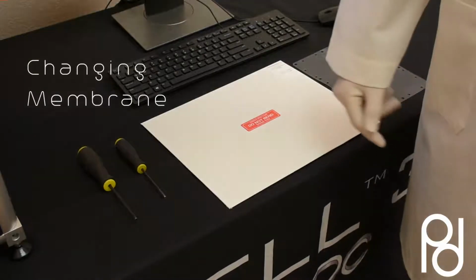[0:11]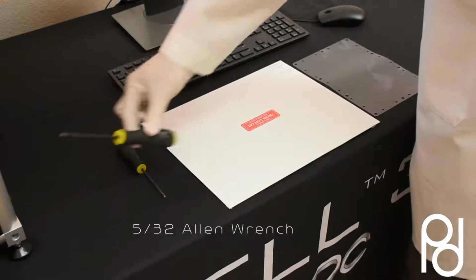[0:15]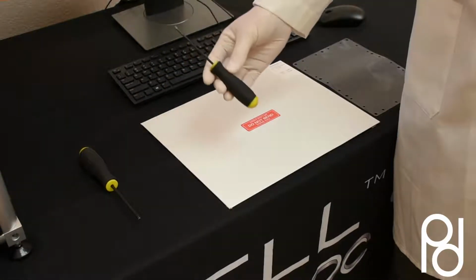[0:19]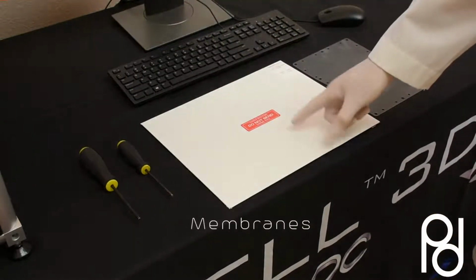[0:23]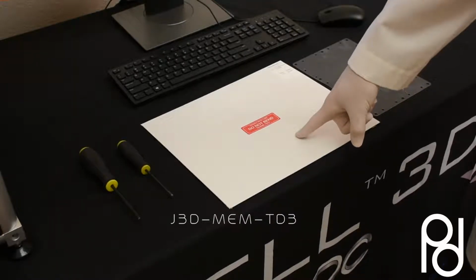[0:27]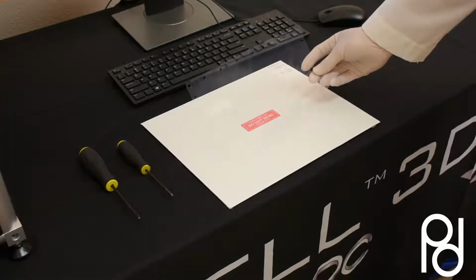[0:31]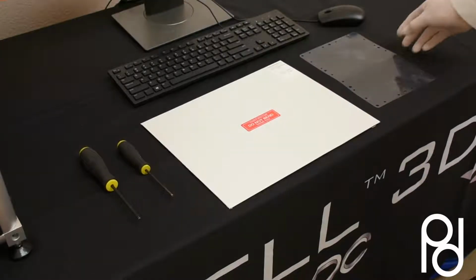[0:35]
Video, we're gonna show you how to change the membrane. You will need a 5/32 Allen wrench, also a 1/8 inch Allen wrench, the membranes. This will be the J3D-MEM-T03. This is what it will look like when you pull it out of the envelope. And this is what we'll use.
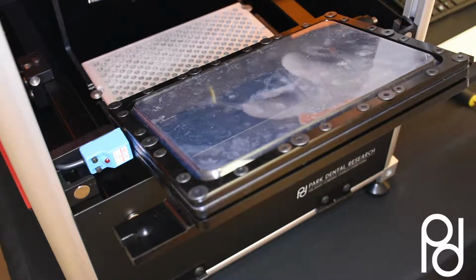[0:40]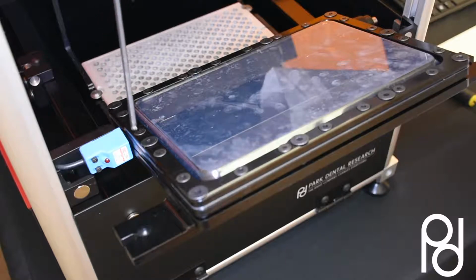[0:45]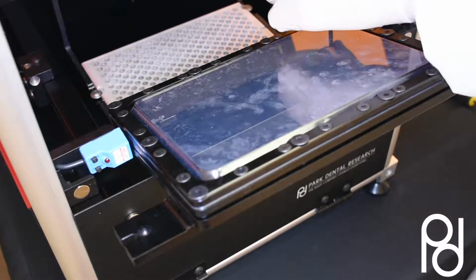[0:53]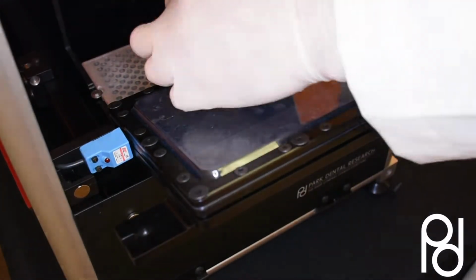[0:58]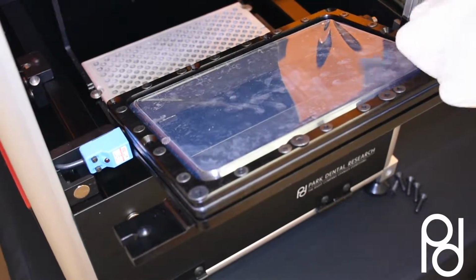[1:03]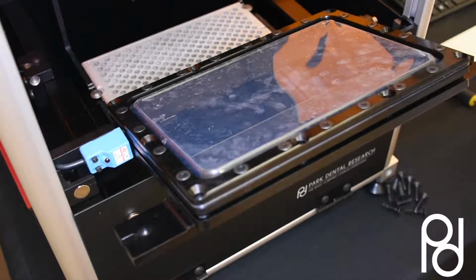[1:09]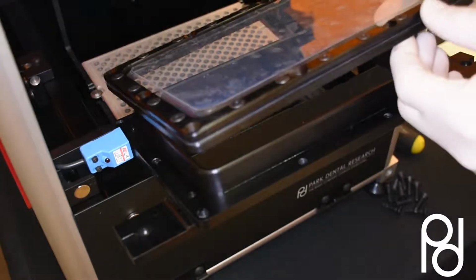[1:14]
Okay, to start off, we're gonna use the 5/32, and we're gonna remove the 10 bigger screws on the outer diameter of the membrane. There's no set order to do this in, so we're just gonna remove all of them. Once you get these ten removed, the membrane will then come off of the main frame.
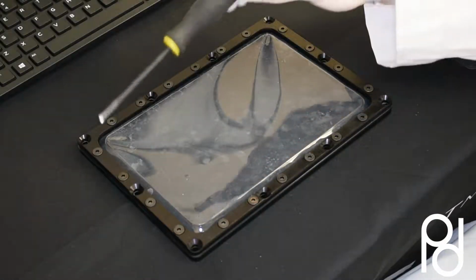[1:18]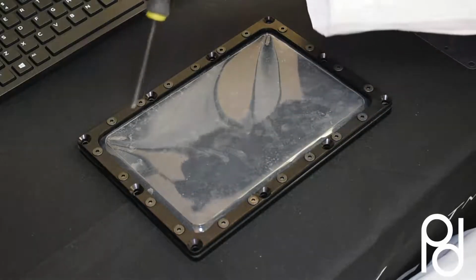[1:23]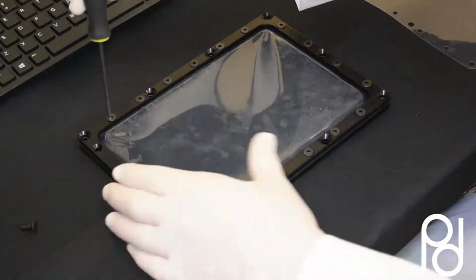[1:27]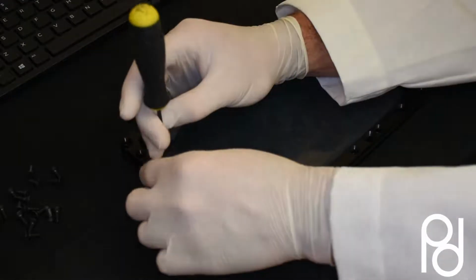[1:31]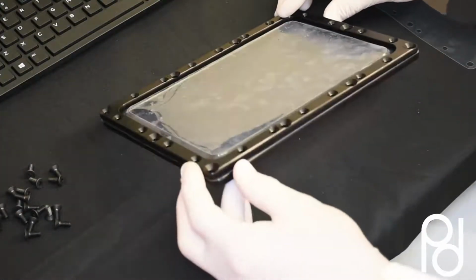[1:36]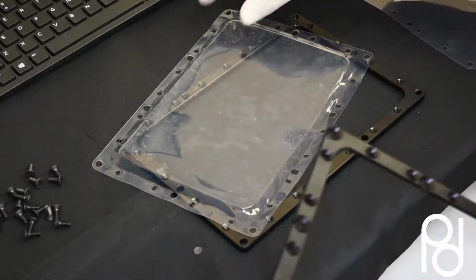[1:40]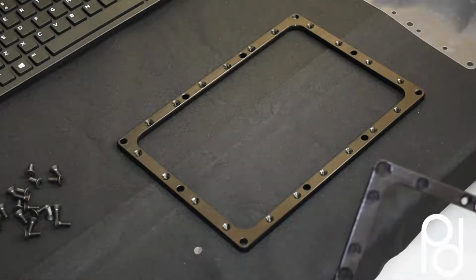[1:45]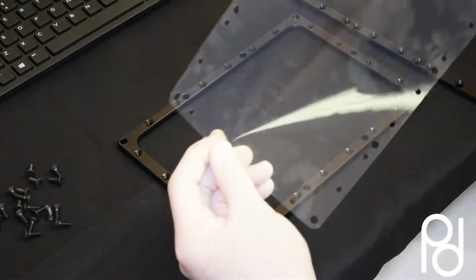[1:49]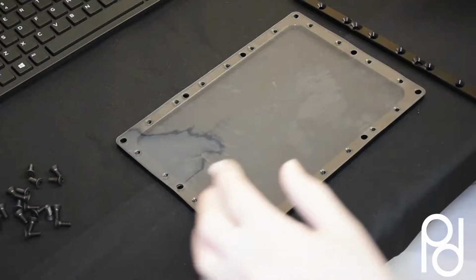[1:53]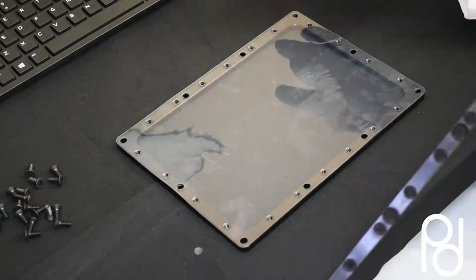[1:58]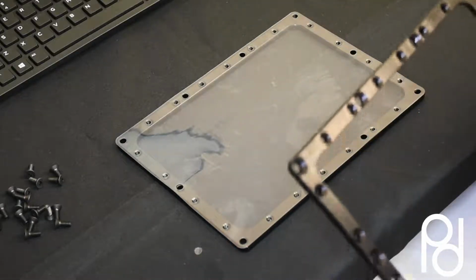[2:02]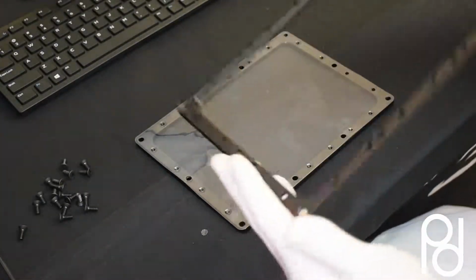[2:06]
It already has your perforated holes, and we'll line it up. And we want to make sure that we leave the bottom frame that has the threads on the bottom. You'll notice here that we have countersunk holes. That's gonna be the top of the frame.
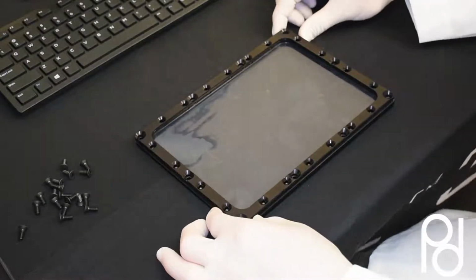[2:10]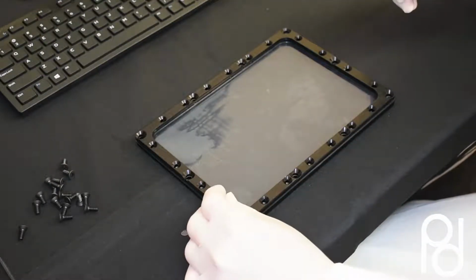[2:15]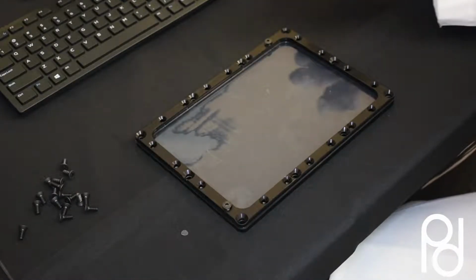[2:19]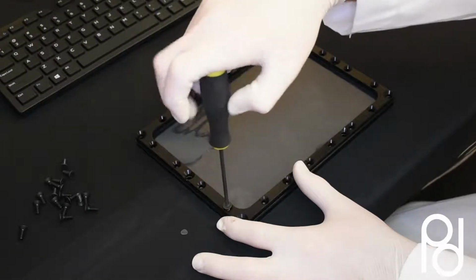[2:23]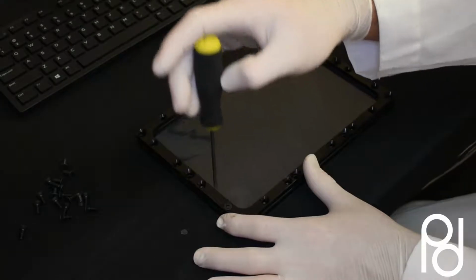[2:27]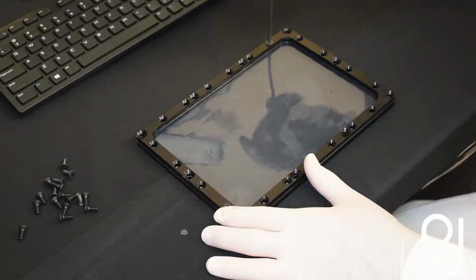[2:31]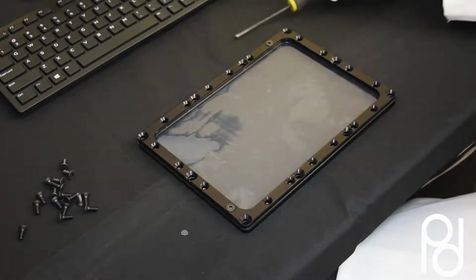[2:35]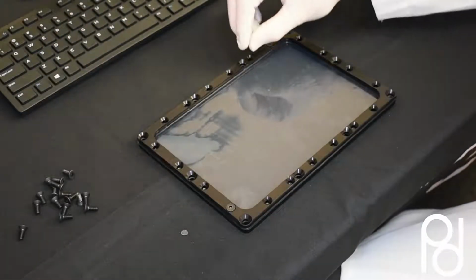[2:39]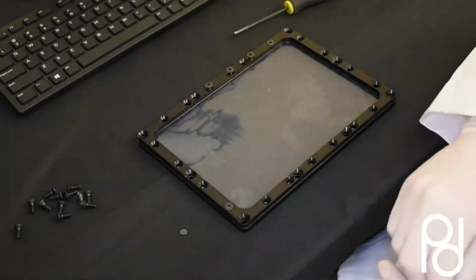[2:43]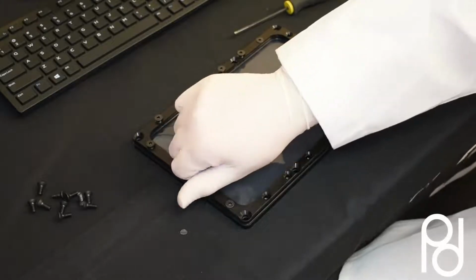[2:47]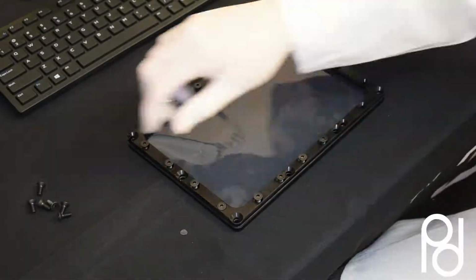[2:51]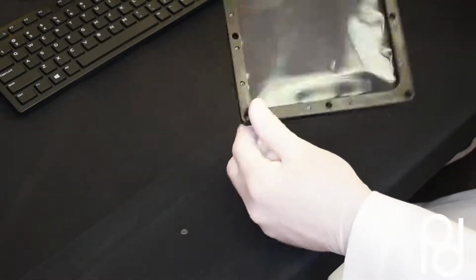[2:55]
So we will line it up, and I'll start with 2 screws on opposite corners. And now we'll just start those, and we want to tighten them. We don't want to over tighten, because then it will be harder to remove once you replace your membrane later on. Once you get the first 2 in, there's no set order, you will start then to insert the rest. Okay, once you have them all back in and tightened, we're gonna now install it back into the machine.
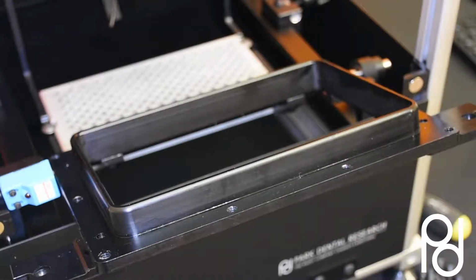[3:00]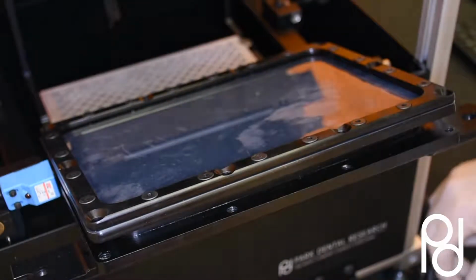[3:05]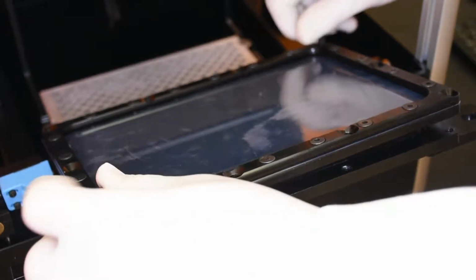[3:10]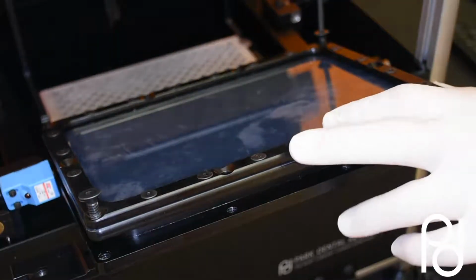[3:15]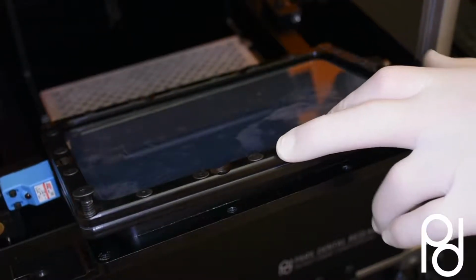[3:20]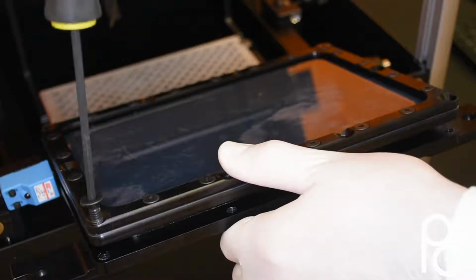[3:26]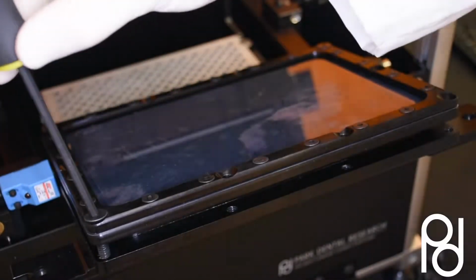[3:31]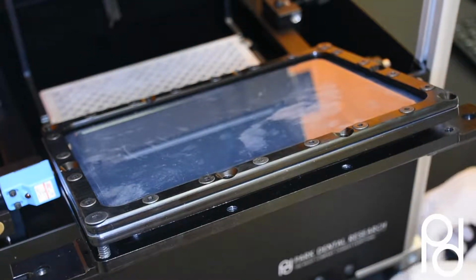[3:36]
Okay, now when we install it back into the machine, we will place it over the main frame, and I will add 2 screws to each corner. And I'm going to start those. You want to make sure that the hole is lined up. That way the thread will start on the bottom. And notice that this is kind of wanting to raise up. We want to hold it down. That way the screw will reach. Once you get those started, we will then add the rest of the screws into the empty holes.
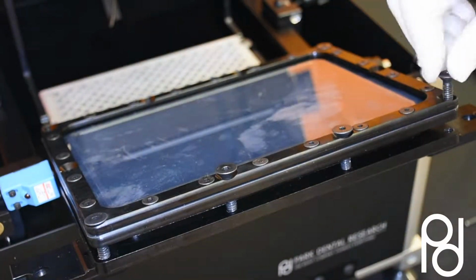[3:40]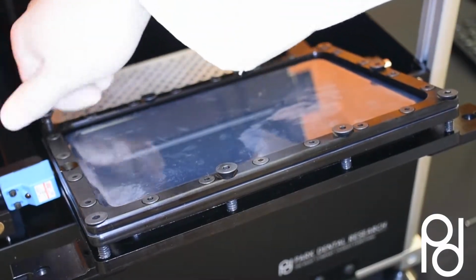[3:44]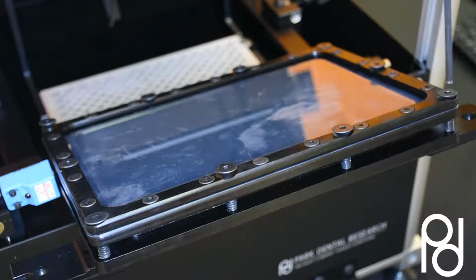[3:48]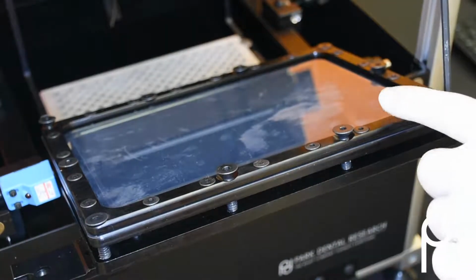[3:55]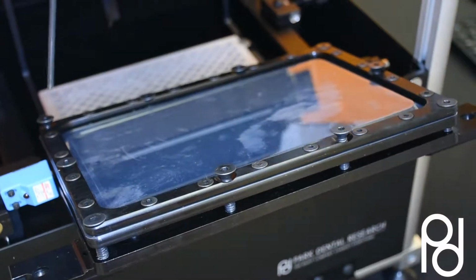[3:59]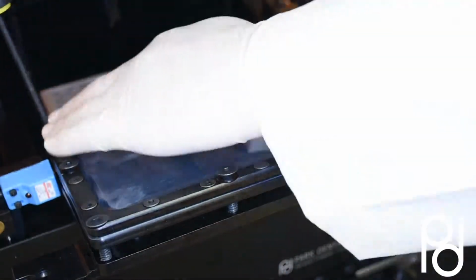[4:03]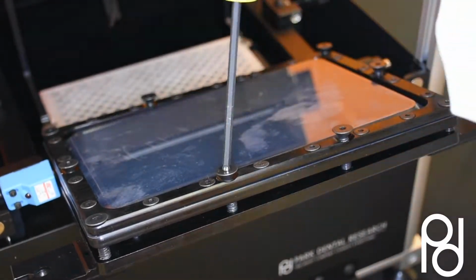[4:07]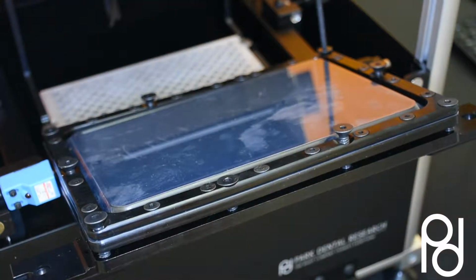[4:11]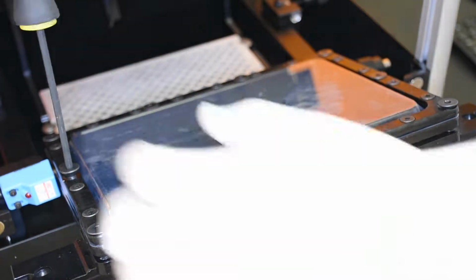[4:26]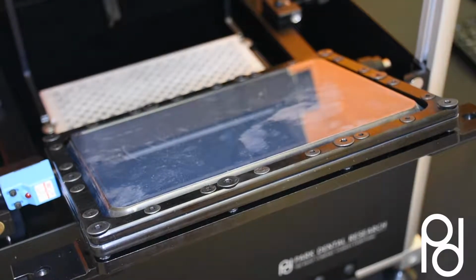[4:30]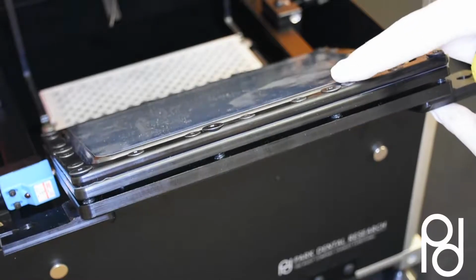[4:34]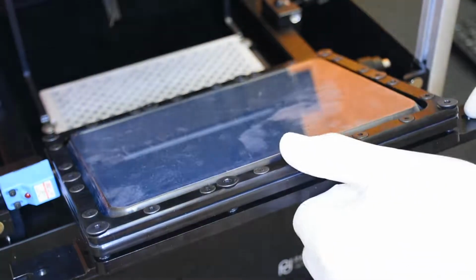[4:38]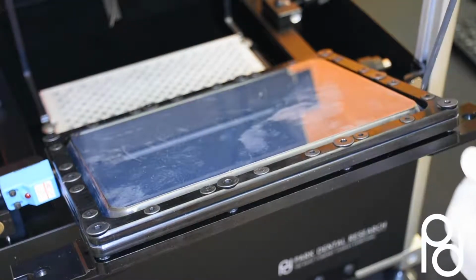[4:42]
At this point, I'm going to use a star pattern to tighten the membrane down evenly. The frame needs to be below the inner lip of the main frame. Now once you have them all down even, you'll want to look at your frame and ensure that your membrane frame is below your inner lip evenly all the way around the frame.
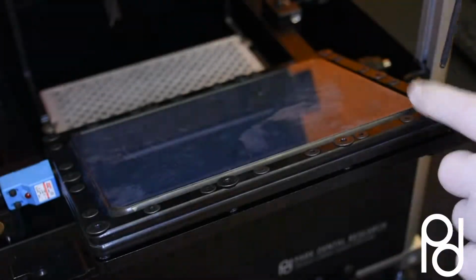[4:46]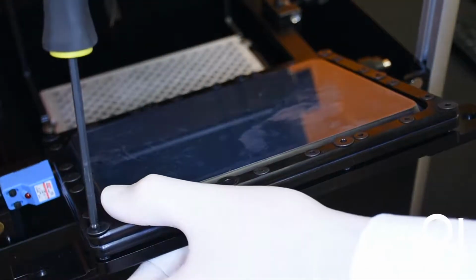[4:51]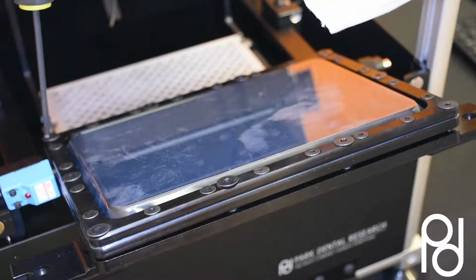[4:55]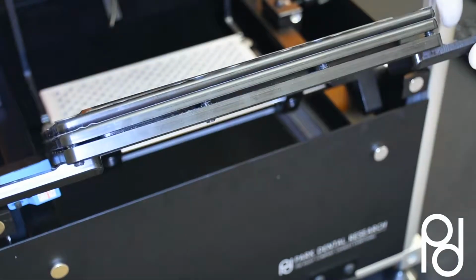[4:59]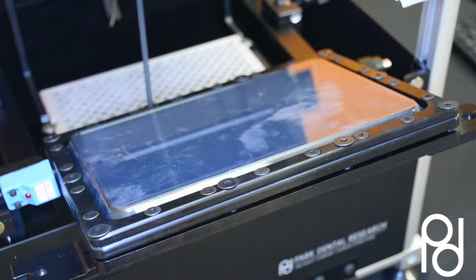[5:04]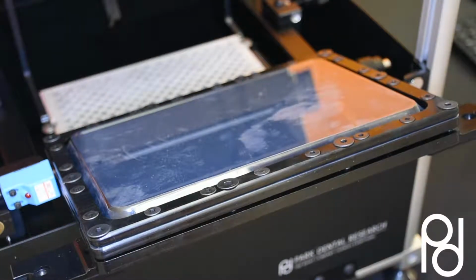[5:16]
So here I have it down a little bit more on the right, so I'm gonna tighten the left hand side down to match the right hand side. And that looks good. So now what I want to do is just go around to make sure that none of these are loose. So this one I almost had to do a full turn. So that's what we want to look for. And the membrane is installed.
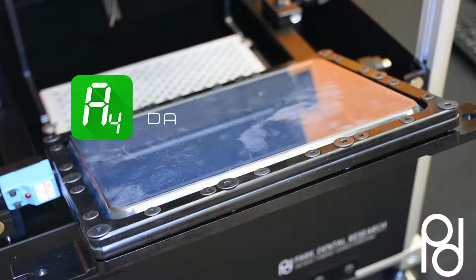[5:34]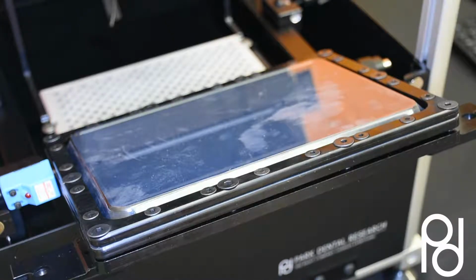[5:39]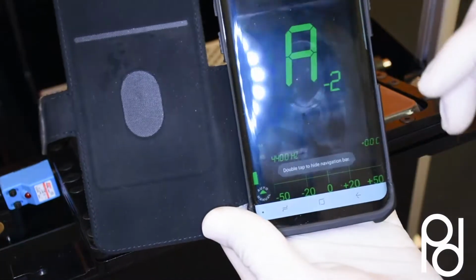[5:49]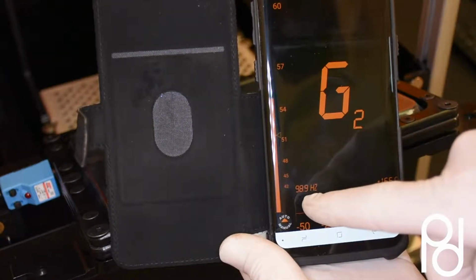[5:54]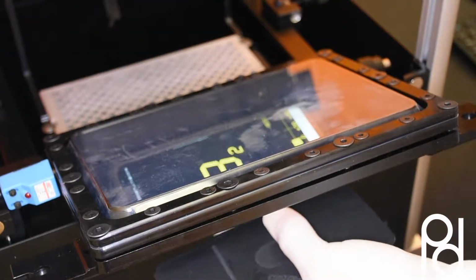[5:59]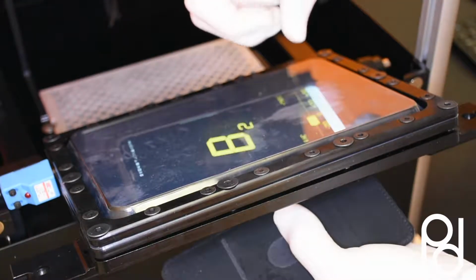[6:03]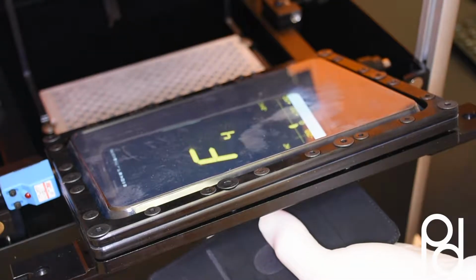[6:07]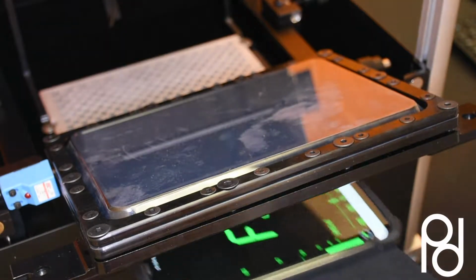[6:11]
So I'm going to place this right below the membrane and thump. And we want to be above 216 Hertz, and we're actually at 350, so that's perfect. Now the membrane is installed.